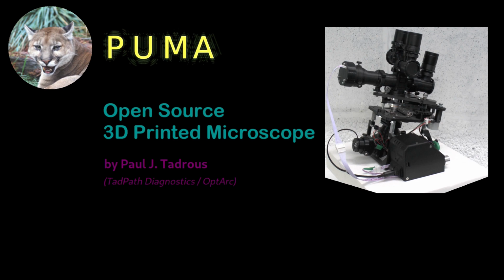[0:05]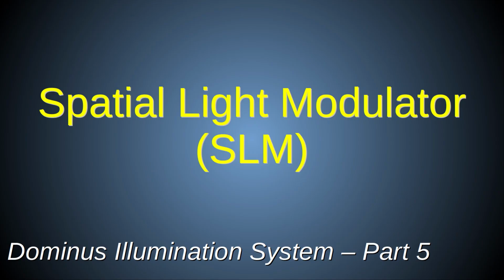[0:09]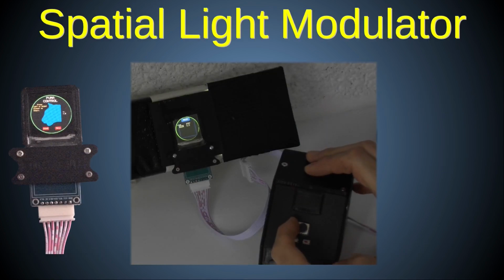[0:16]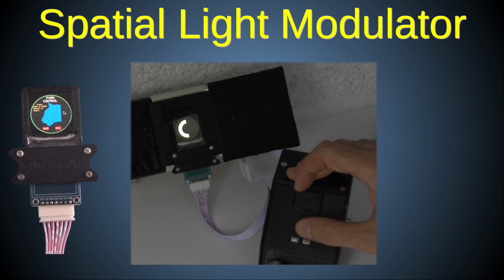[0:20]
In this video, I'll explain how to make the TFT screen-based Spatial Light Modulator, or SLM. This allows for programmable and dynamic Fourier light filtration to implement advanced contrast methods.
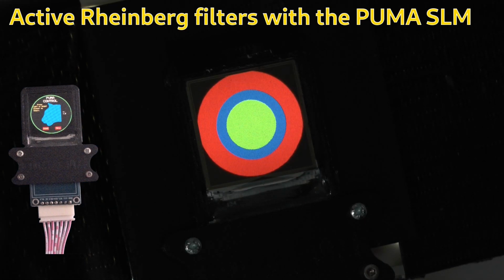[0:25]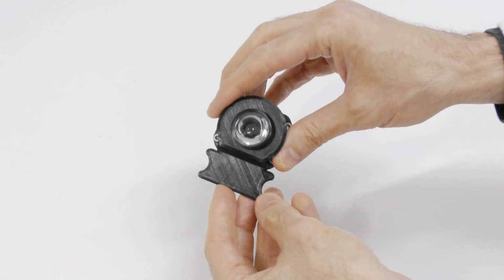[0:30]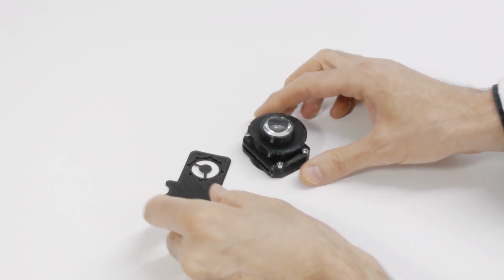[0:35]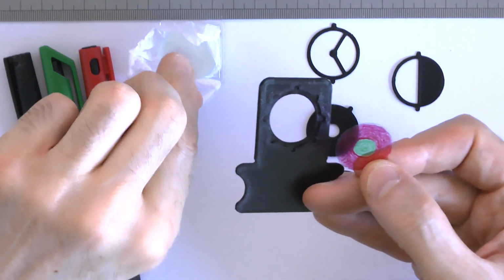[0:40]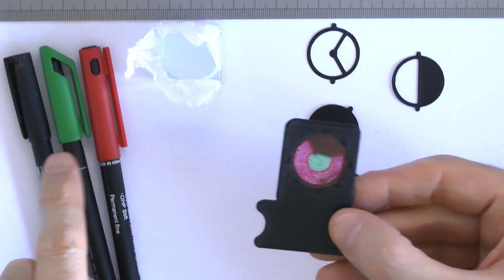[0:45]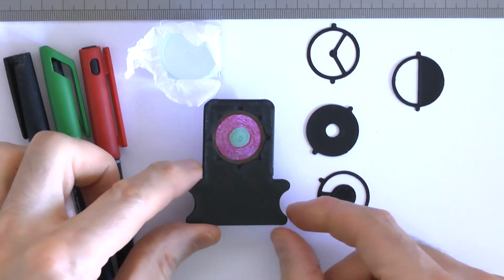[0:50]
You can implement some advanced contrast methods without this SLM, using PUMA's easy-to-access Fourier plane of the condenser with a simple filter system. This filter tray can take a standard 25mm round glass cover slip on which you can print any arbitrary aperture in black and white or various colors. So, you don't need this TFT SLM for doing things like Rheinberg filters, oblique illumination, Schlieren phase contrast, dark ground illumination, and other static custom apertures.
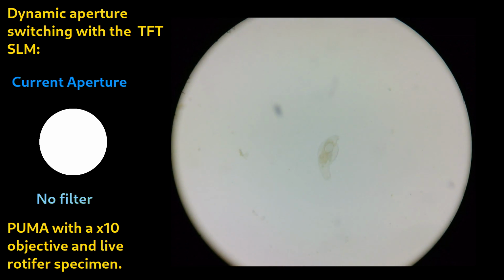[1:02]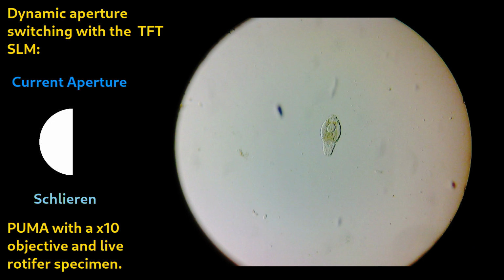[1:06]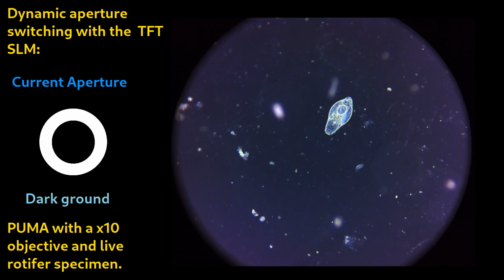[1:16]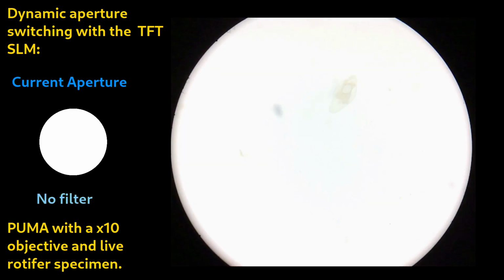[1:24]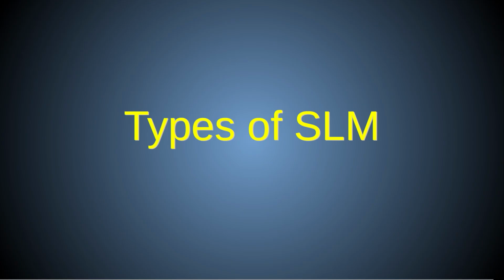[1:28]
The real benefit of this TFT-based SLM is its dynamic, programmable nature, which allows you to derive optimum apertures algorithmically and to perform aperture scanning, such as for Fourier ptychography and 3D tomography. It also allows you to change apertures rapidly during observation without mechanically disturbing the microscope by physically changing the filter in the slot.
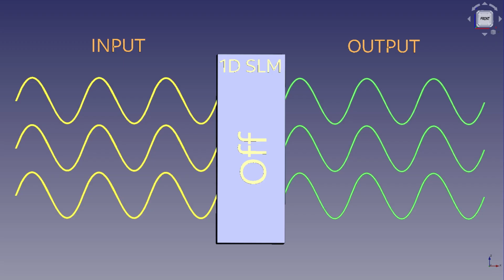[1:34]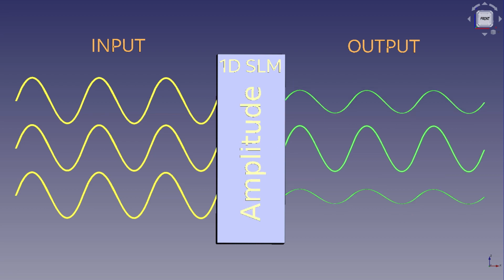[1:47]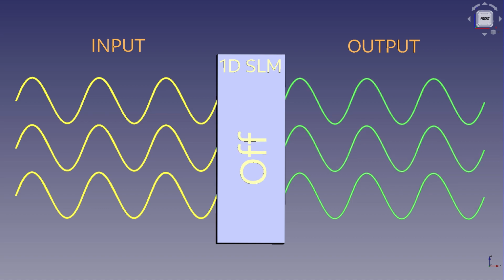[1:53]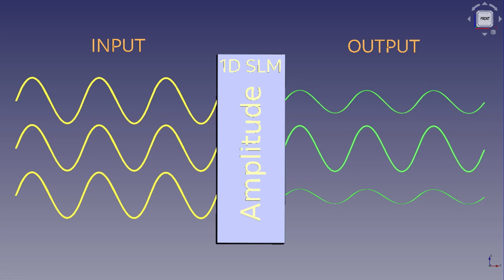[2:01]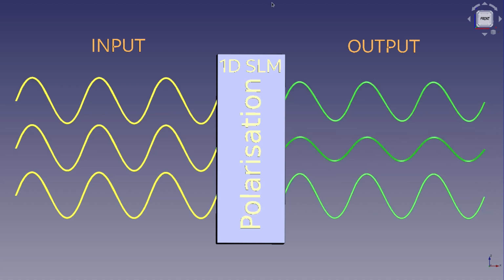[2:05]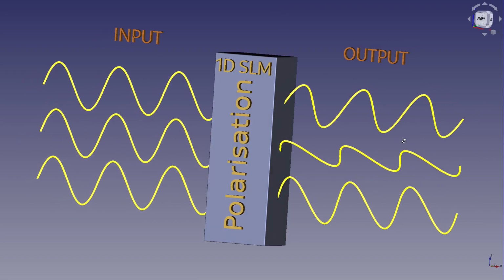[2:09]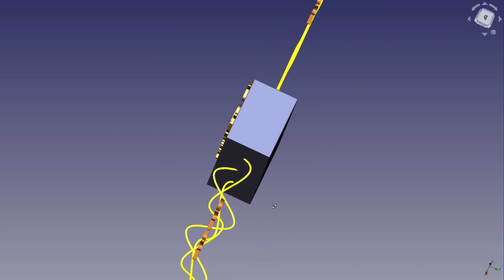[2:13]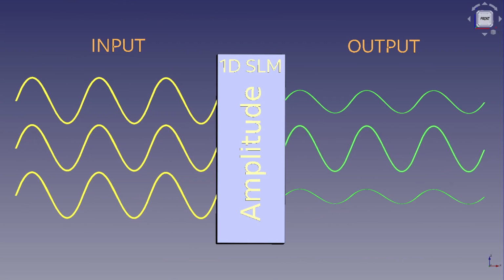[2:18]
In general, a spatial light modulator refers to any device that can alter the characteristics of a field of light in a way that varies from one part of the field to another. This spatial pattern of variation may be static or it may be dynamic, for example by being under computer programmable control. Examples of characteristics of light that an SLM can modulate include its amplitude, its phase, and/or its polarization. So, an amplitude SLM, for example, alters the amplitude or intensity of light coming from it in a way that can change at various points across its surface.
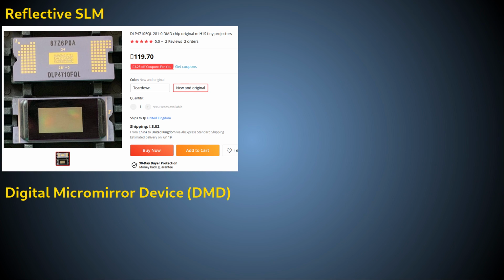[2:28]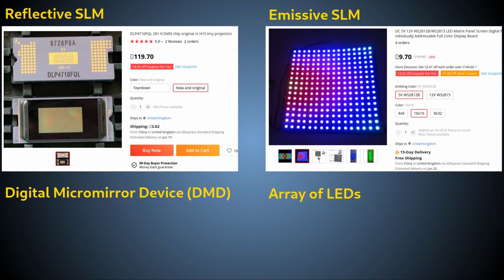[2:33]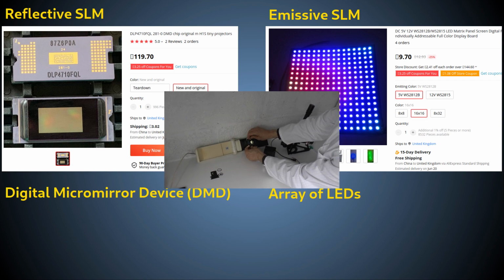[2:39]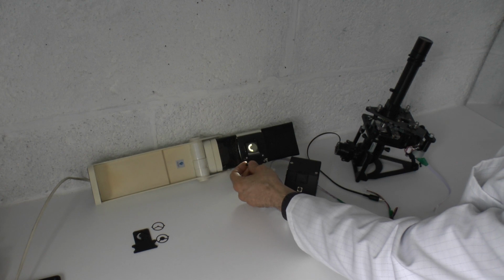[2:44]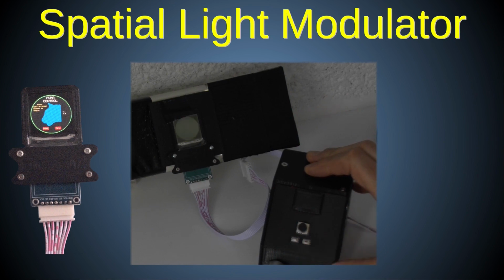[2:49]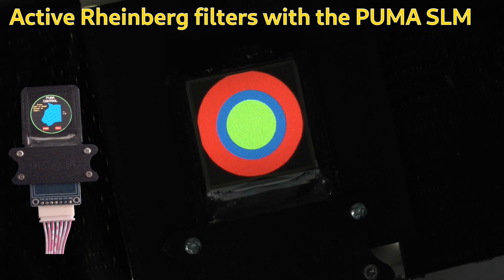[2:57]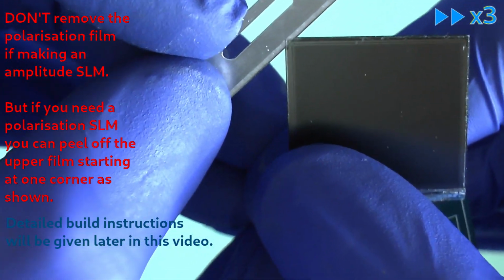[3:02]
SLM devices can be reflective, such as a digital micromirror device or DMD, emissive, such as an LED illumination matrix, or transmissive, such as a transparent TFT display device. The PUMA SLM is most often used as a transmissive amplitude SLM, which uses the polarizing effects of a TFT screen to restrict the passage of light through it at any point across its surface in a way that can be controlled by a computer. However, if you remove the upper polarizer filter from the TFT, then it becomes a polarisation SLM instead.
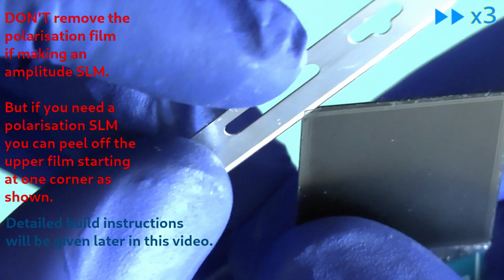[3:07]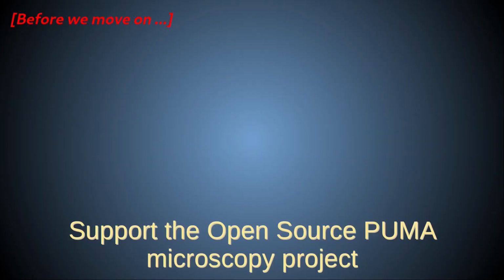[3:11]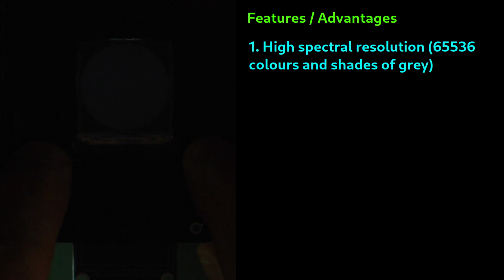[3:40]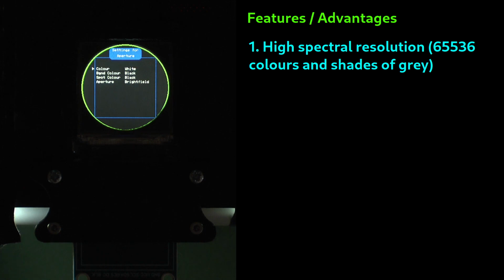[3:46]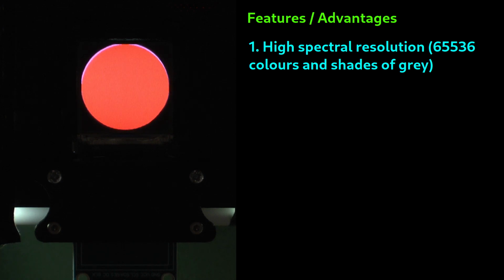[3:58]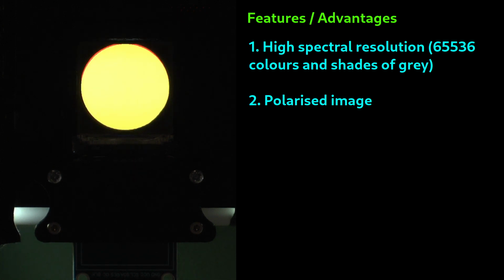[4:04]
The PUMA SLM is a color SLM in that it can restrict light passing through tiny RGB filters differentially at each pixel position, and it can restrict the light in a graded way, so not restricted to all or nothing passage like a traditional physical aperture. Because the PUMA SLM is based on a TFT screen, the light passing through it will be linearly polarized. This may be an advantage, a limitation, or a neutral point depending on your intended application.
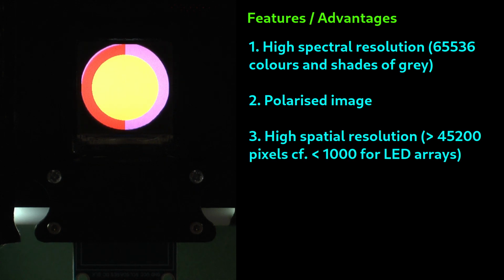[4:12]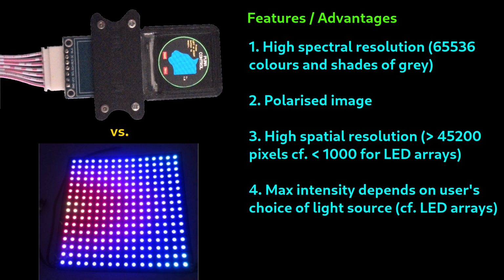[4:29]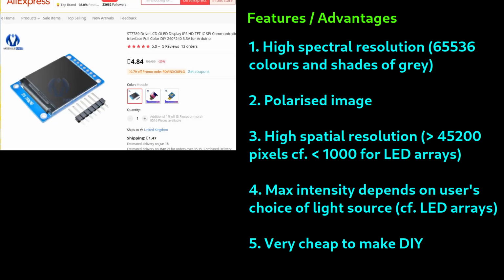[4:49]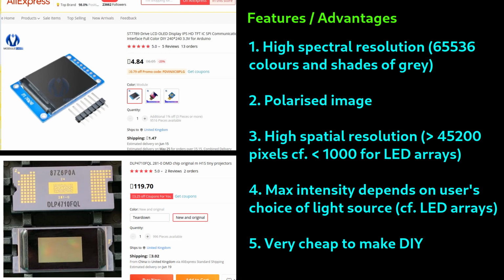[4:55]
Unlike an emissive LED array, the PUMA SLM has a higher spatial resolution of more than 45,000 addressable pixel positions across its 24mm clear round aperture, compared to less than 1,000 for LED arrays that have been used in the published scientific literature to date. Also, the amount of light transmitted by a PUMA SLM is limited by whatever illumination source you choose to use, including laser light, whereas LED arrays are limited by whatever output each LED can produce. The PUMA SLM is also much cheaper than other SLM types, being based on this inexpensive TFT screen module costing only a few pounds, whereas a typical DMD costs over £100 and a phase SLM can cost over £10,000.
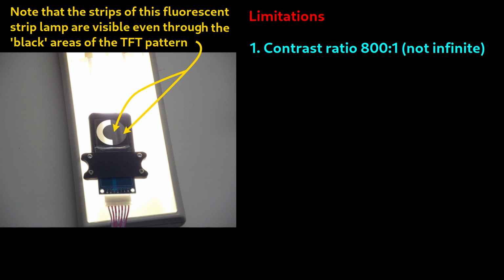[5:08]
There are, of course, some limitations to the PUMA SLM. Firstly, it cannot produce 100% blockage of light. Even the black areas allow some light to get through. The stated contrast ratio for the TFT is about 800 to 1 according to the product datasheet. However, in some circumstances, this light leakage can be used to advantage.
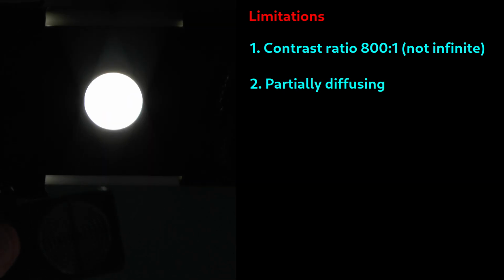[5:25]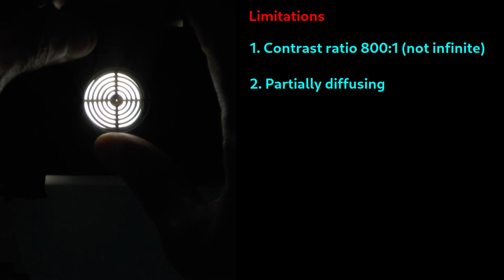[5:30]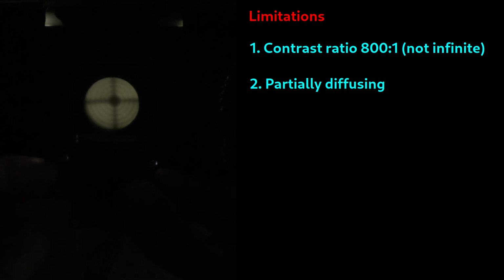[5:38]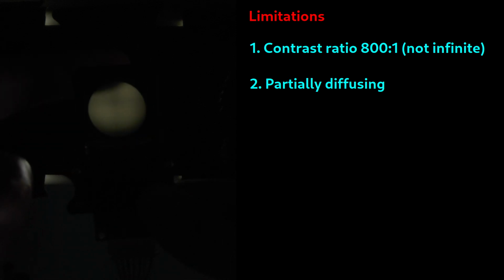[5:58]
Also, the PUMA SLM is not completely optically clear. It has some diffusing properties. For this reason, it cannot be used behind the objective lens, for example, to effect Fourier filtration in the back focal plane of the objective. And, when used in the lower focal plane of the condenser, it will blur the image of the field stop, so will not permit full Köhler illumination. This latter issue is not practically important in most cases, because the field stop image is not as important in reducing internal reflections in a PUMA scope as it is in some other and older microscopes.
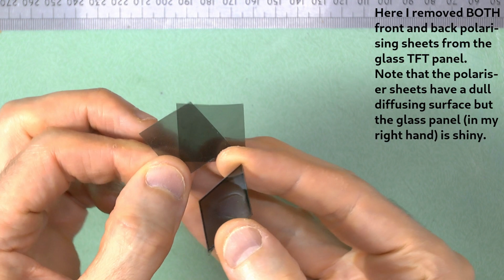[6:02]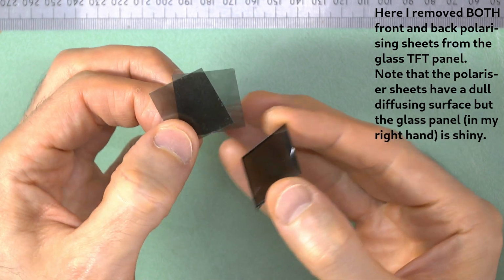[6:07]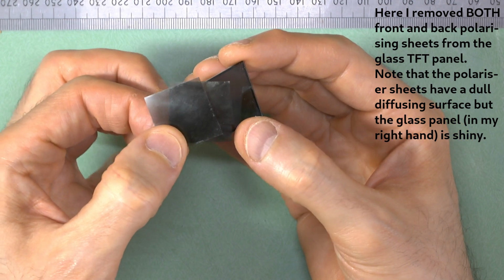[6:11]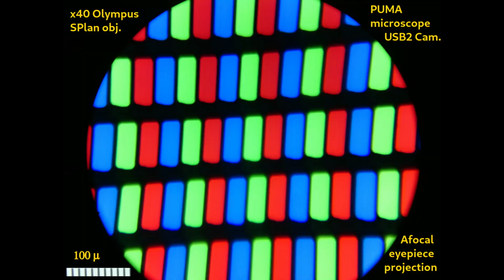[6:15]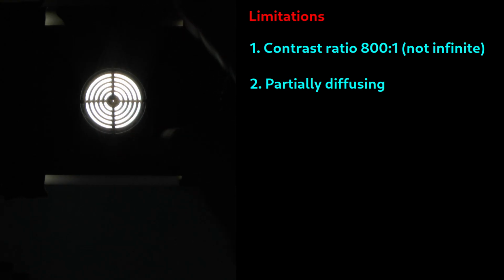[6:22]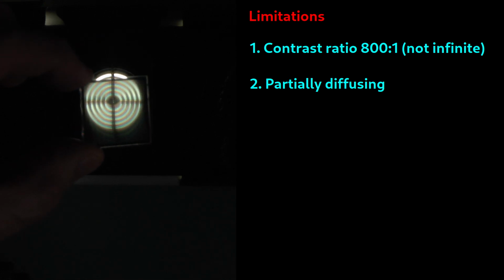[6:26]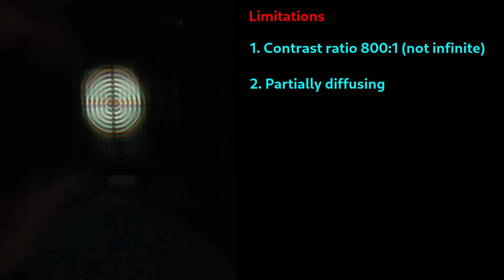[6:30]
It is possible to remove the diffusing polarizer film on the front of the TFT panel and replace it with a clear non-diffusing film. However, that will not solve the issue because the interfaces between the RGB filters for the pixels in the glass of the TFT panel act as a kind of diffraction grating and so can cause some dispersion of the transmitted light anyway. The diffusing polarizer actually helps by eliminating these diffraction grating effects, so I do not recommend replacing it.
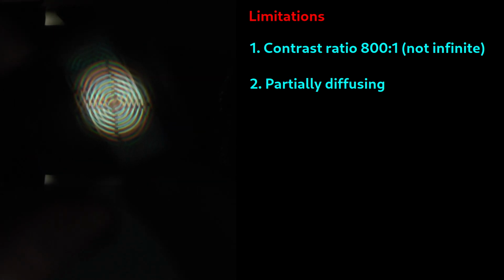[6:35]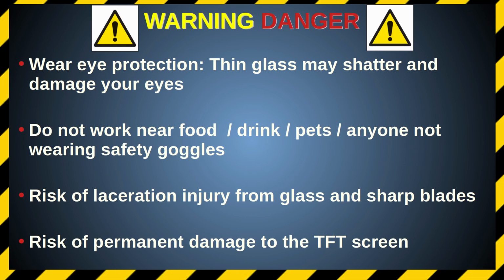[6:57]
Finally, it's quite difficult and potentially dangerous to remove the backlight from one of these TFT displays, so it's difficult to make a PUMA SLM, whereas other types can simply be bought ready to use. Be warned that there is potential risk to your eyes from shattering the thin glass in these displays while attempting to remove the backlight, so you must always wear laboratory-grade eye protection if you attempt to perform this procedure.
For the same reason, do not perform this procedure in the presence of others unless they too are wearing appropriate safety goggles, and do not attempt this procedure in the presence of any pets, food or drink that could get contaminated by flying shards of glass. Take appropriate precautions to prevent cuts to yourself and others from handling the sharp tools used in this procedure as well as from potential glass fragments. Take care to clean the work area well afterwards.
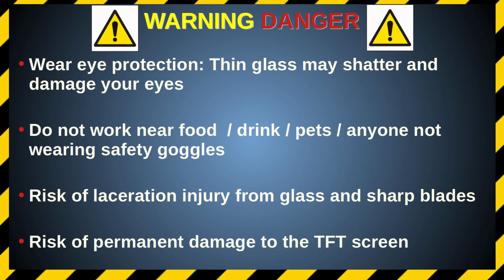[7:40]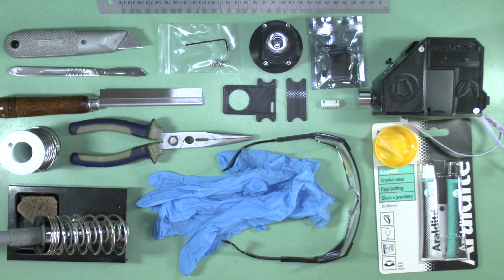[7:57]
There is also a high risk that you will permanently damage or destroy the functionality of the display at any stage during this procedure, so do not attempt this procedure unless you're prepared to accept such loss. The method I'm about to show you is not foolproof and does not guarantee success. These are the parts and the tools you'll need to build the SLM. Details are provided in the video description.
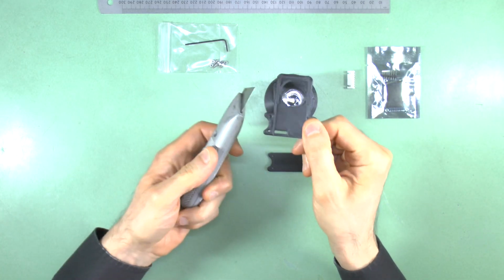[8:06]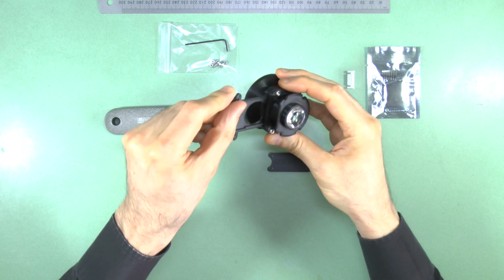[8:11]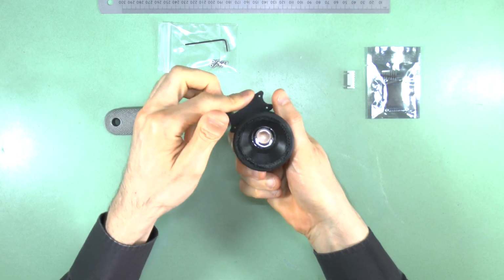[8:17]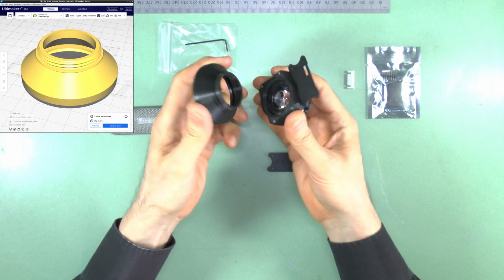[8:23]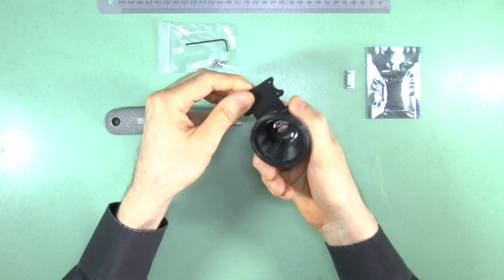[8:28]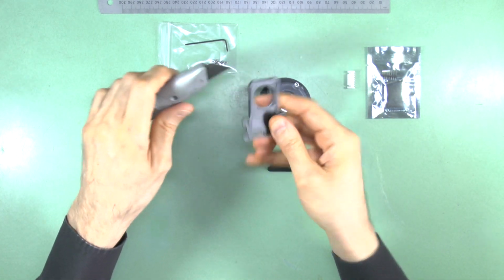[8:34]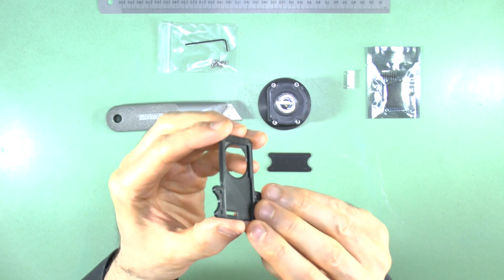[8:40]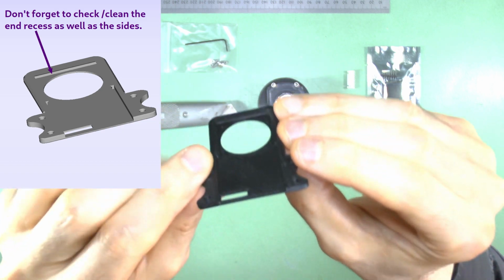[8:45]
First, clean up the printed parts and test the SLM holder to see if it fits easily and with minimum force into the slots you intend to use it with. Here I'm using an Abe condenser. Ensure that the adapter module is attached to the condenser during the test, either the condenser to mirror holder adapter or the condenser to upper collector adapter. If there is difficulty inserting or removing the SLM holder, scrape and/or do whatever else it takes to fix the problem at this stage before inserting the delicate TFT screen. Ensure that the slot that will accept the TFT panel is clear of any stray plastic blebs or threads.
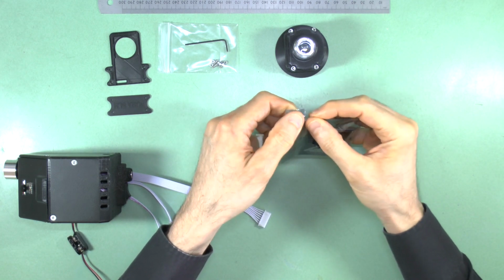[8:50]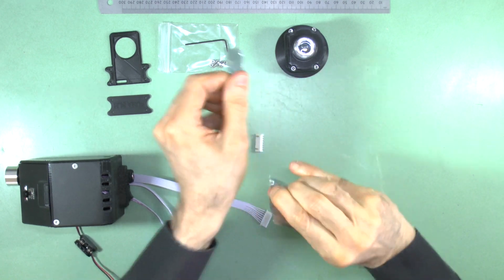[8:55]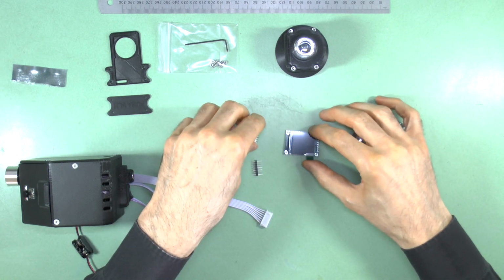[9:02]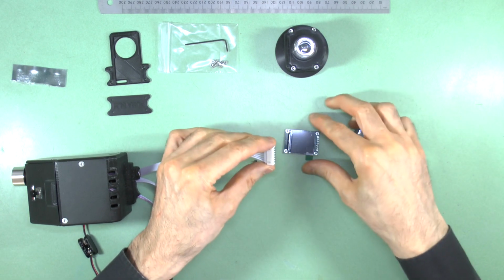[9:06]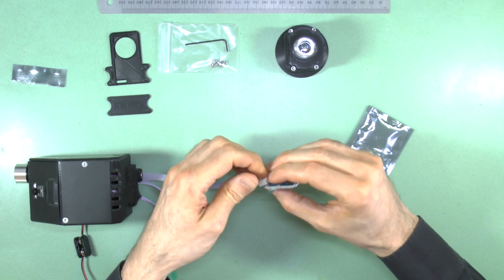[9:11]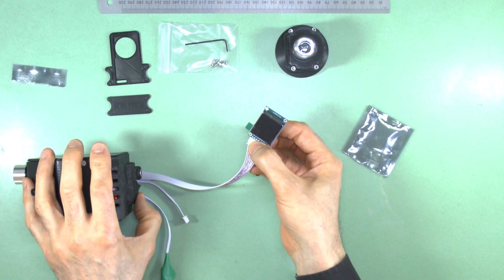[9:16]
Before modifying the TFT screen, first connect it up to a suitable power supply and display driver and test it. Here I'm using the PUMA Control Console or PCC, but you can use your own custom driver. This is so you know that the screen is working and undamaged prior to modification. You should also test the screen at various stages of the procedure to ensure it still works, but make sure you do not perform any aspect of the procedure with the screen still powered on, or you may short-circuit the electronics and destroy the screen that way.
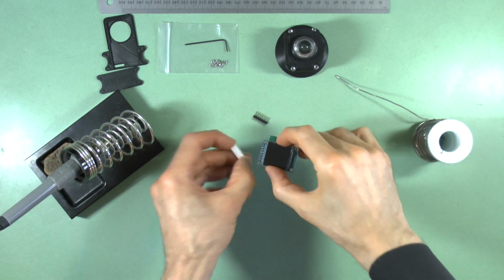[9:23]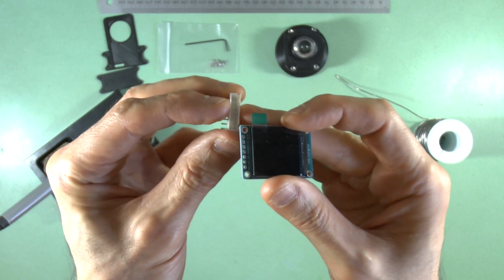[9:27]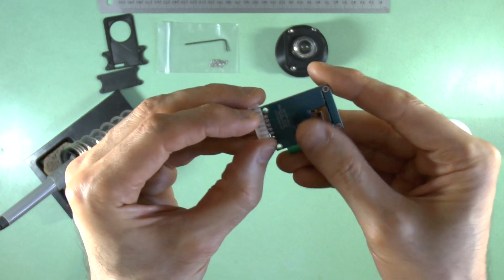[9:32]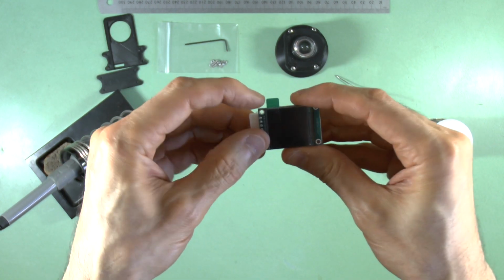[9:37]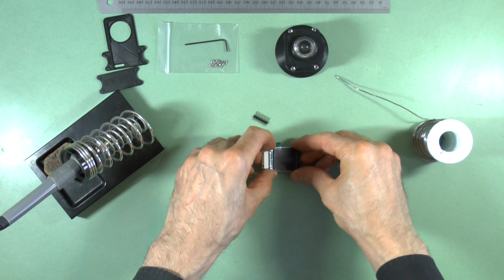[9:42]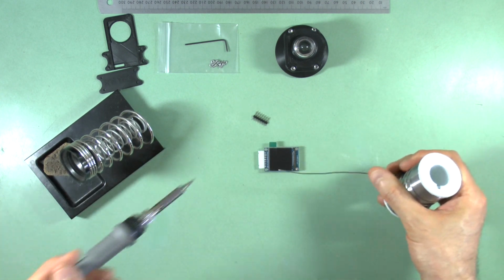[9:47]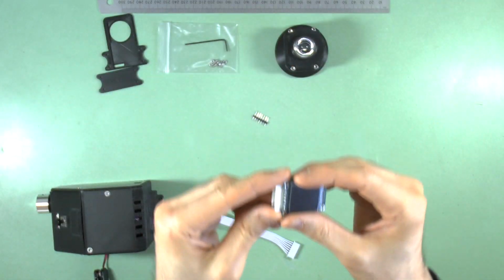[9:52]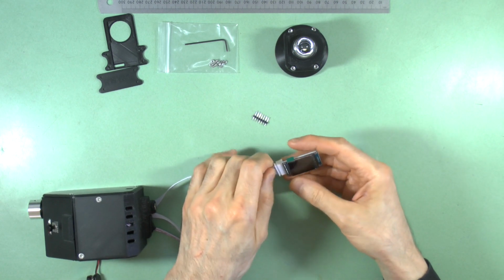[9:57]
Now solder the connector to the screen. I use a 7-pin JST-XH male PCB header with 90-degree pins as shown, rather than the supplied connector, because it ensures I connect the ribbon cable the correct way round each time, provided of course you connect the header the right way round at this stage, so ensure you connect it as shown. After soldering, test the screen to ensure it still works.
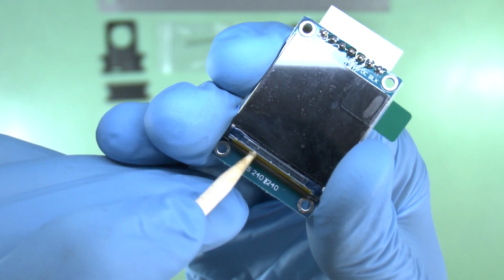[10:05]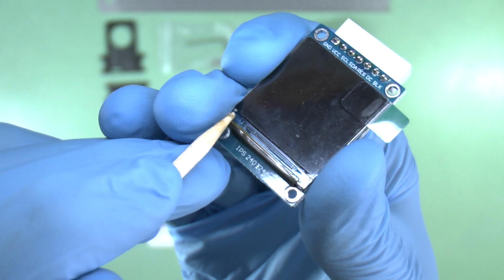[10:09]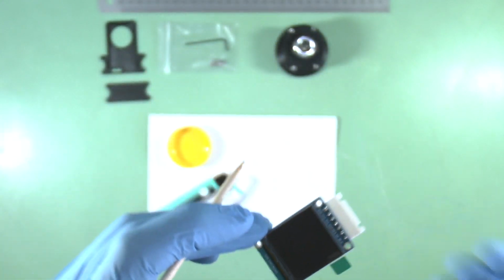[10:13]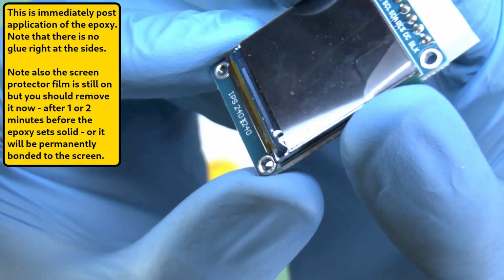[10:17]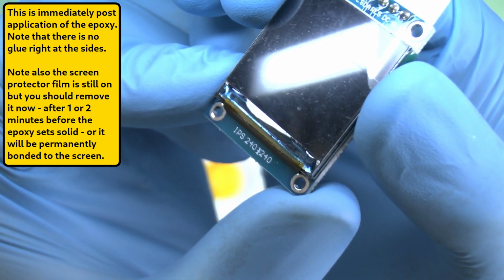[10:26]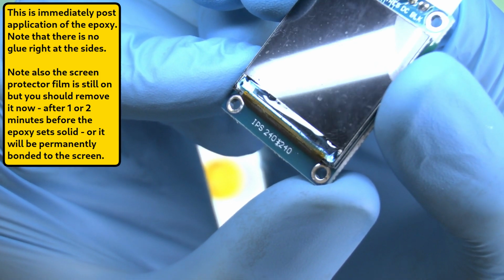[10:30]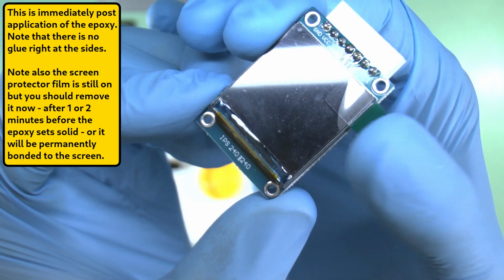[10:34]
The next step is to reinforce the very fragile thin glass connector strip with some strong epoxy resin and allow it to set fully before continuing. This will increase your chances of success, but it will not fully protect the thin glass from cracks, so you must still be very careful. When you do this, ensure that the epoxy does not go right to the edges to contact the metal or overflow down the sides to the underlying layers, and minimize any overspill onto the top of the screen.
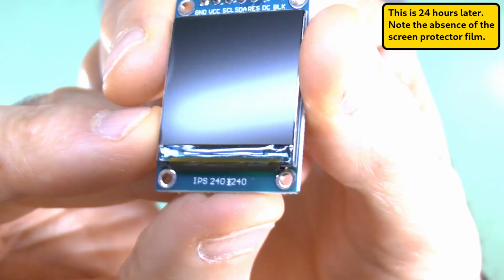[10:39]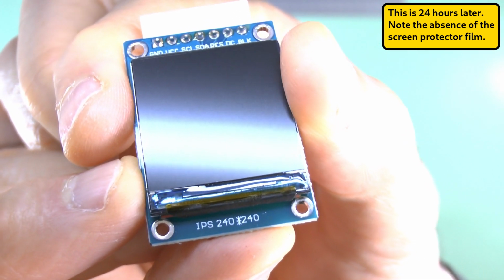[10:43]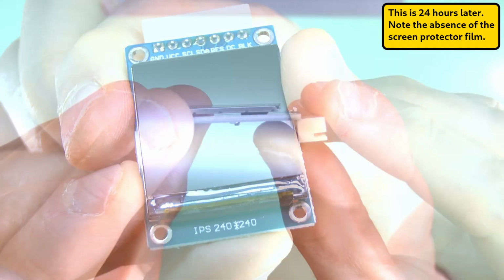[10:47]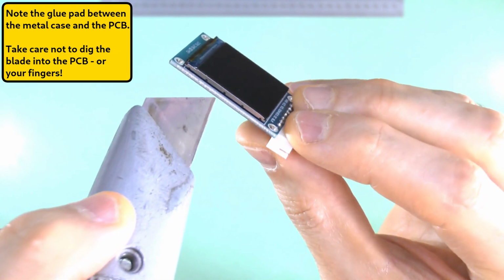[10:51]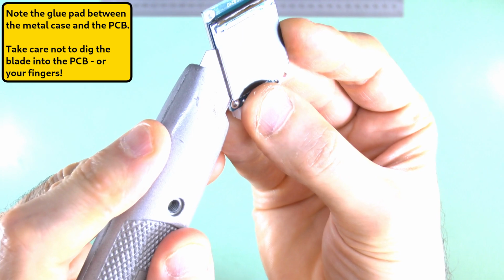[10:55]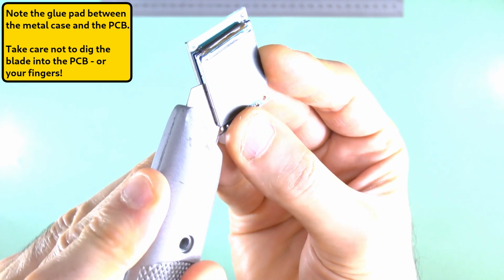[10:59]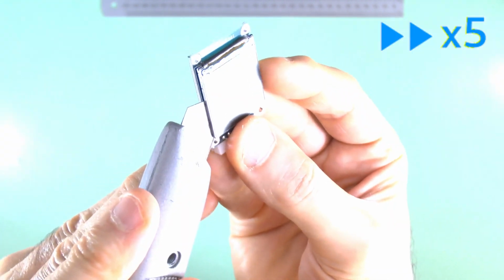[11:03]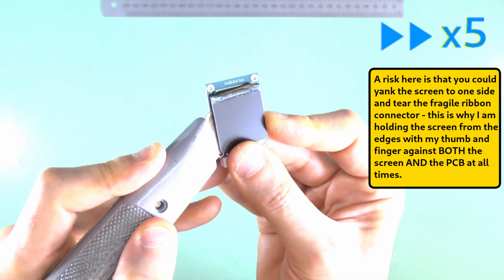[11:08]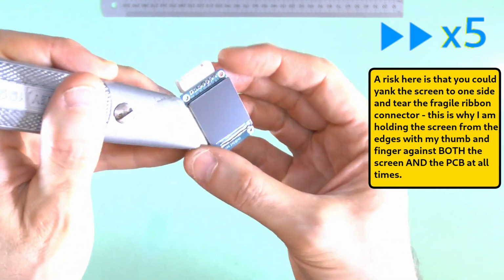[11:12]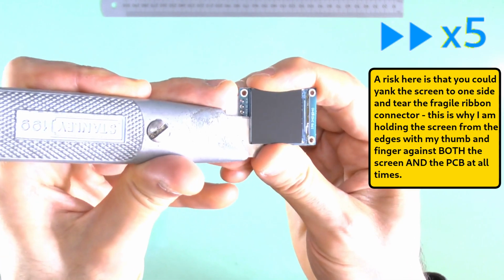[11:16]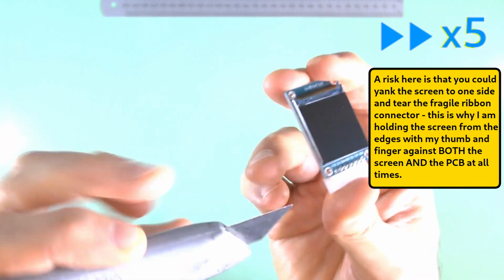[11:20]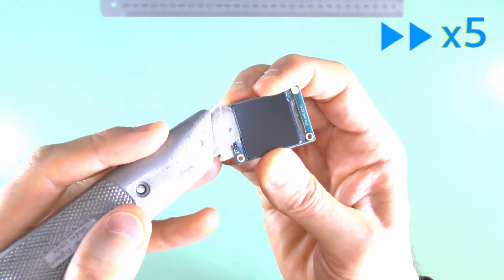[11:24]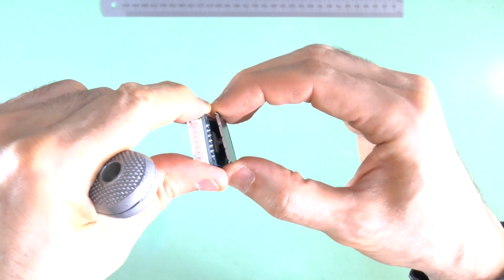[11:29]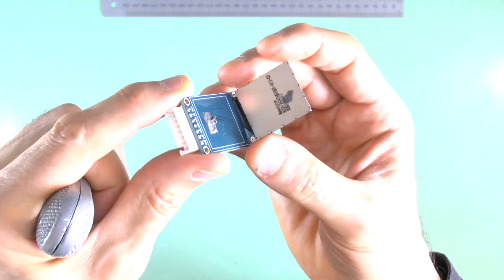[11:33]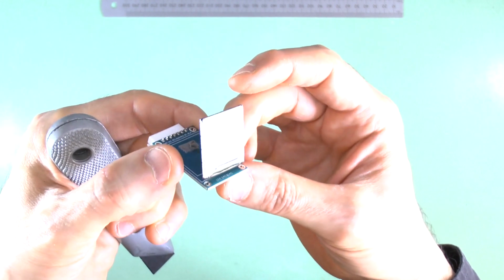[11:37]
Carefully, gently and slowly lever the TFT screen metal housing case off the PCB with a broad flat blade. It is held there by adhesive glue or foam. Once it is free, test the TFT again to ensure this hasn't broken it.
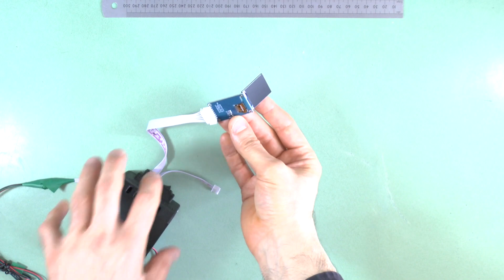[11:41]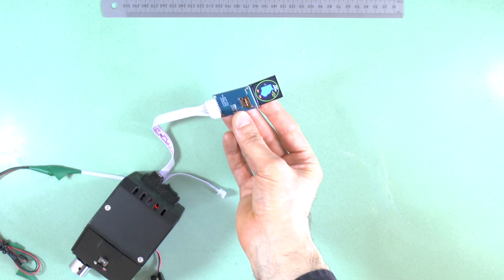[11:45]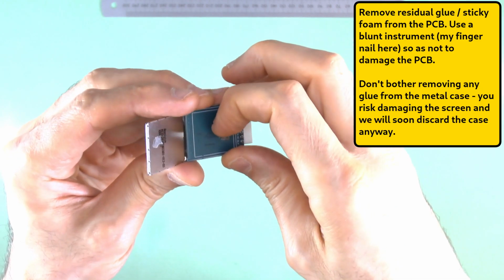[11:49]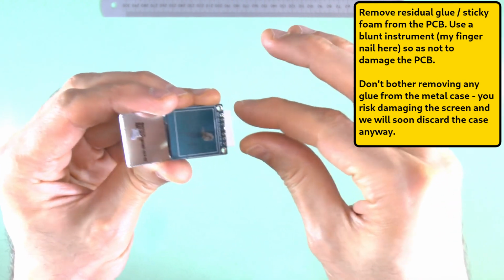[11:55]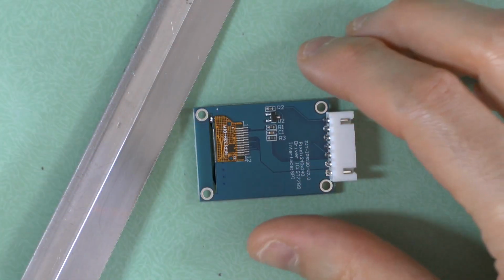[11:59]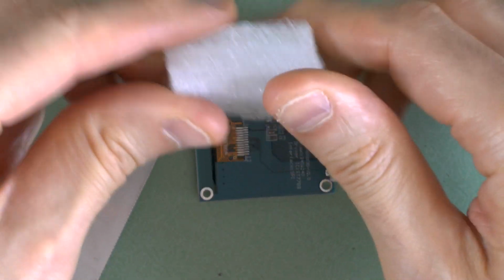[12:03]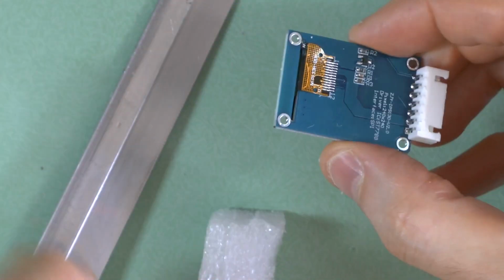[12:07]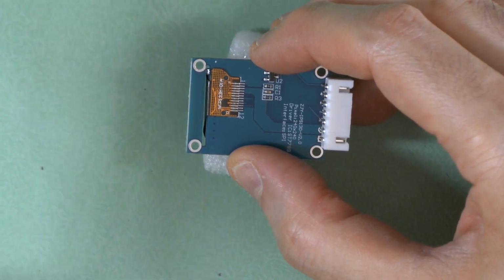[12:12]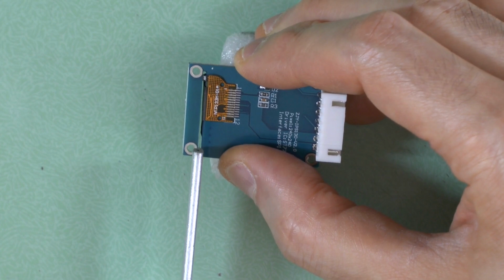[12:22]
Carefully, gently and slowly use a fine-toothed craft saw to make score marks on the PCB on the two sides of the slot that the TFT screen ribbon cable passes through. The side that has the greatest clearance from the ribbon cable is scored horizontally until all the copper layer on both sides has been cut through, and some of the PCB substrate material as well.
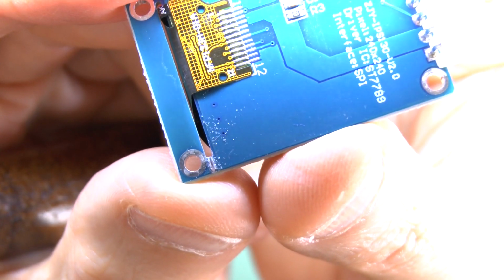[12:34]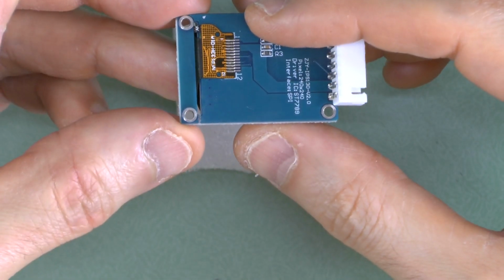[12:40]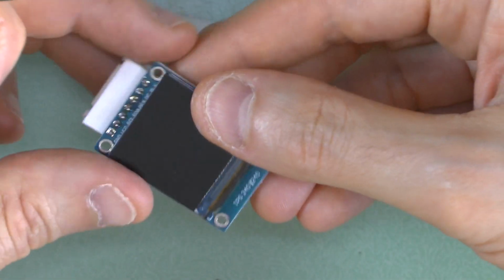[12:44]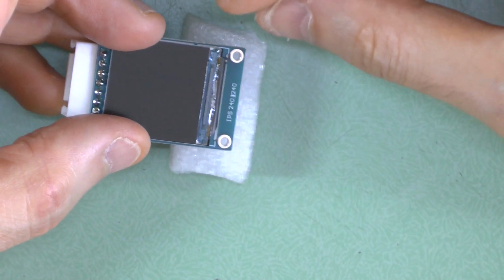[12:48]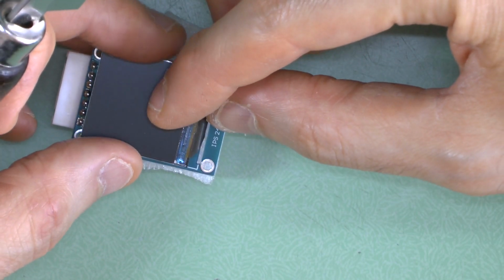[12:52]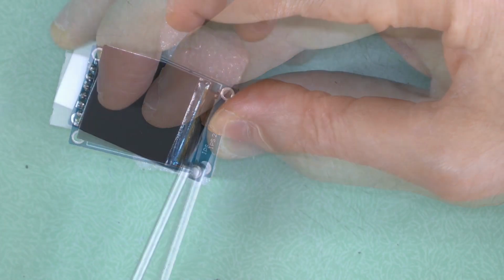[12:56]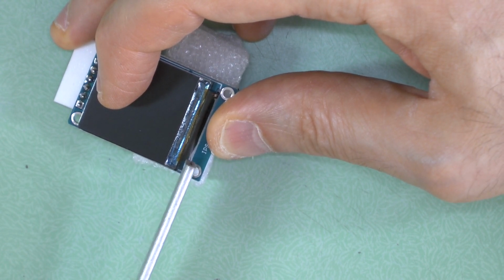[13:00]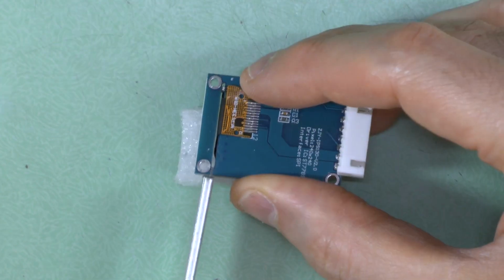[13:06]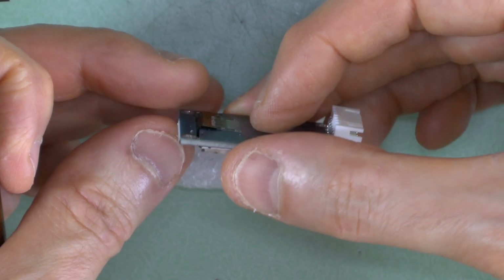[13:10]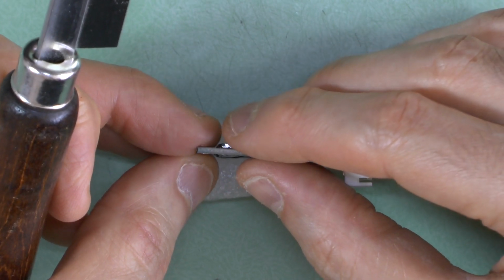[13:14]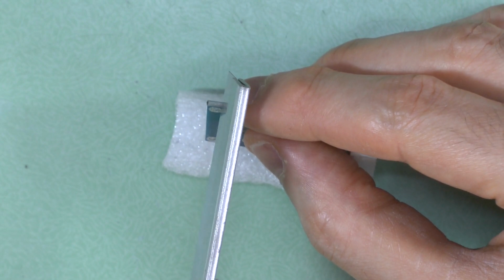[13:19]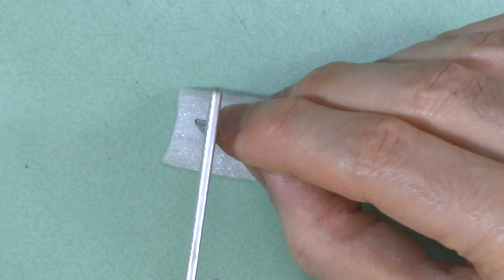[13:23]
On the opposite side, you're too close to the delicate ribbon cable to score parallel to the PCB's surfaces, so score it on its edge, taking care not to stress the cable by putting pressure on the free TFT metal enclosure.
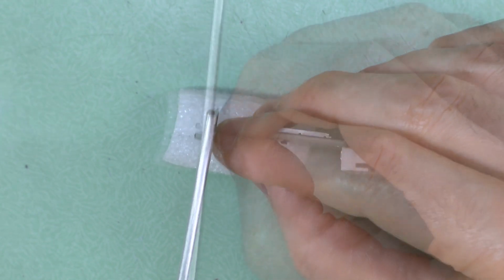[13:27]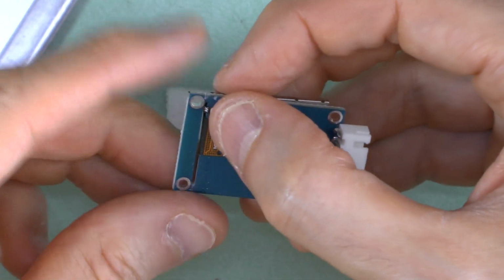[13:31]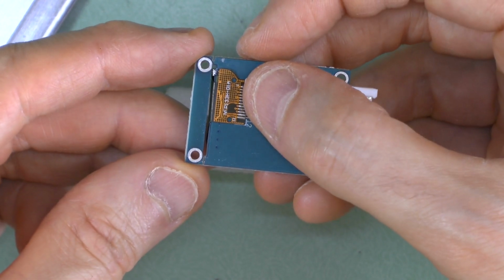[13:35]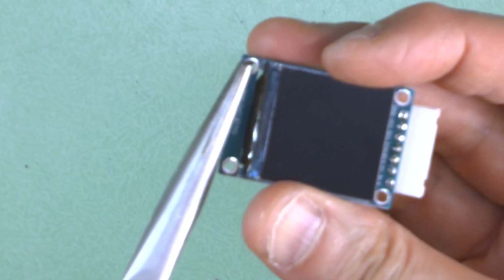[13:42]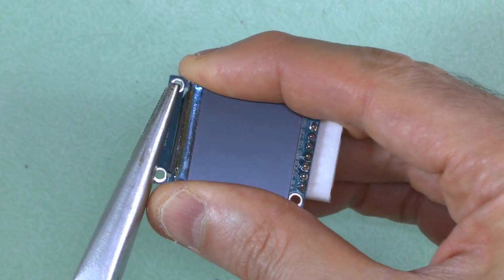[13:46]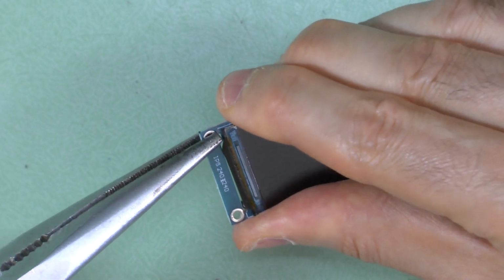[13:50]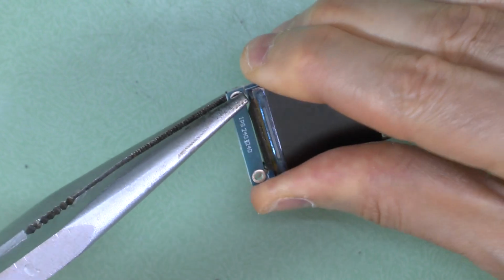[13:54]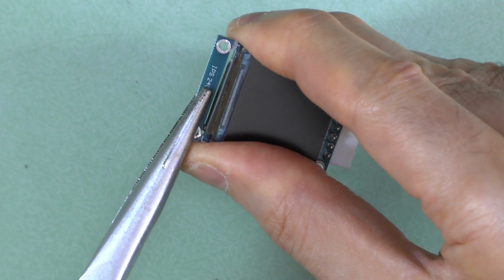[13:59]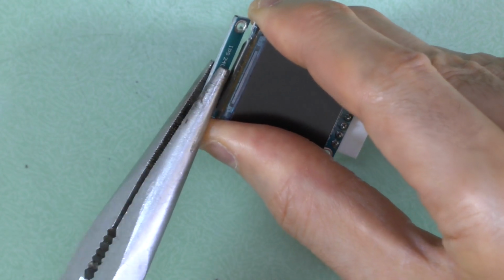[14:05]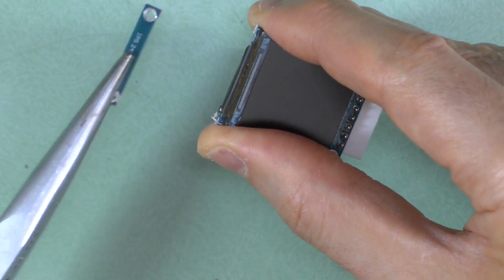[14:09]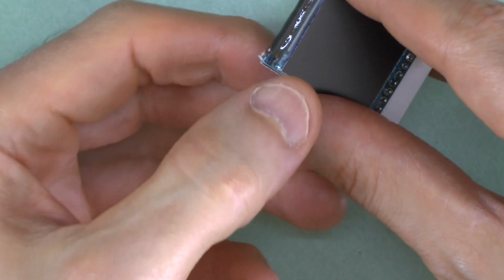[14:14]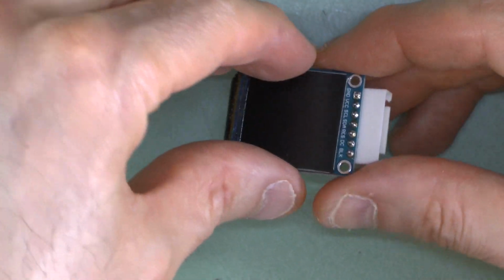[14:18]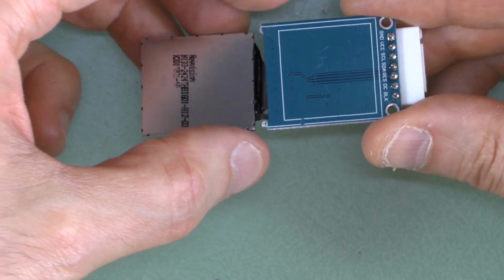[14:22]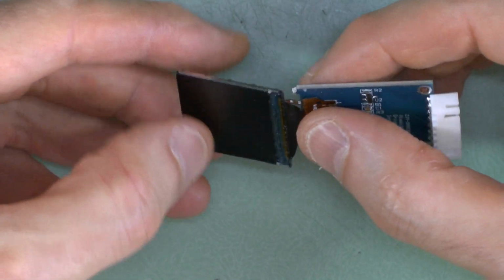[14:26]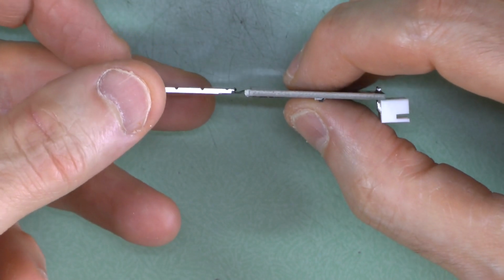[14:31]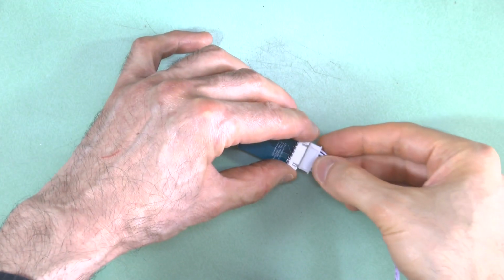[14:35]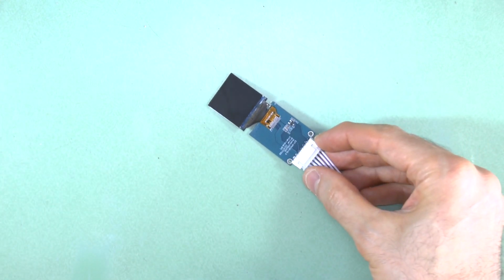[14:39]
Once scored on both sides, use long-nosed pliers to rock back and forth the outer strip of PCB till it snaps off. I snap off the end that was scored horizontally first, and then the end closest to the ribbon cable. Test the TFT after this to ensure it still works.
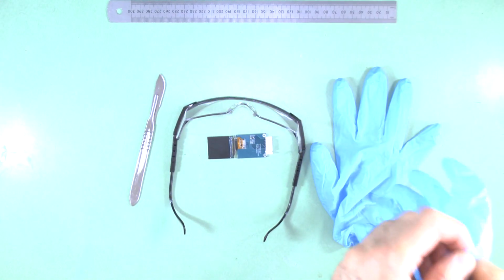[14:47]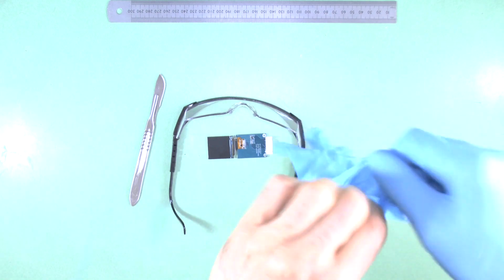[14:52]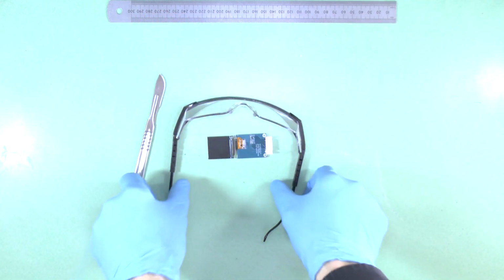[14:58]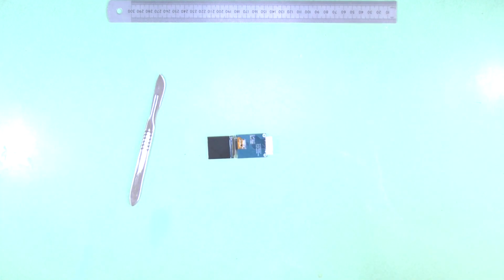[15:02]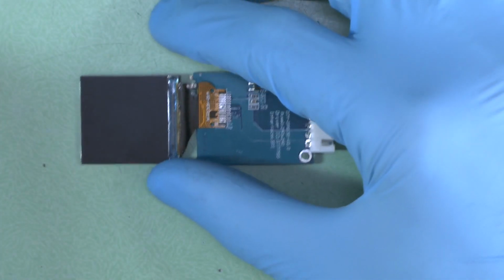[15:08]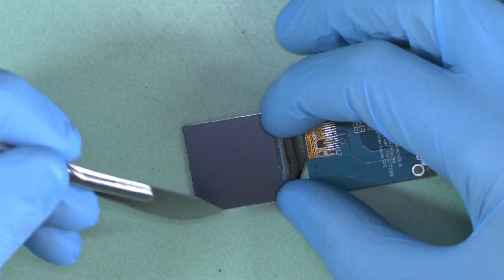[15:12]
This is all tricky and delicate work, but now comes the most delicate of all, removing the metal casing, reflective panels and backlight LEDs. The ribbon cable is connected to a very thin extension of glass coming off the bottom of the main glass panel. We partially reinforced this earlier with epoxy, but it is still very easy to crack with only minimal pressure. With this in mind, wear your eye protection goggles and do the following.
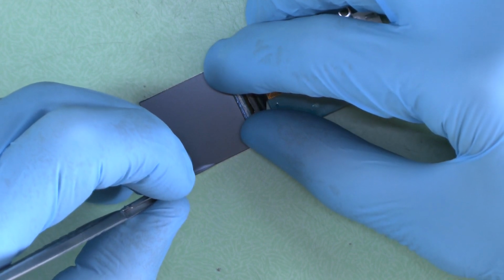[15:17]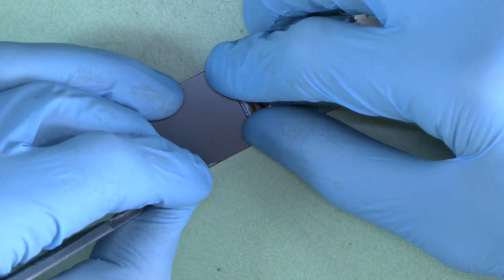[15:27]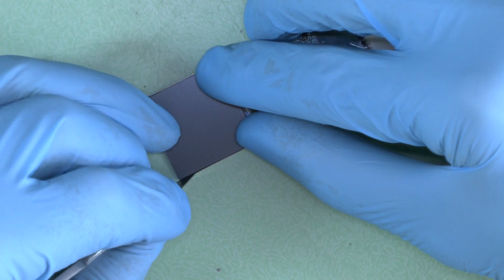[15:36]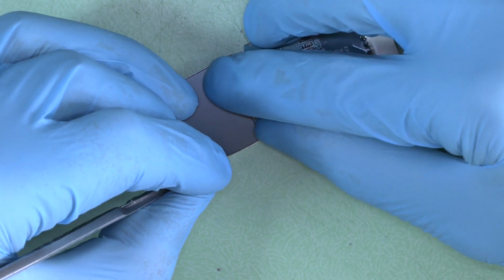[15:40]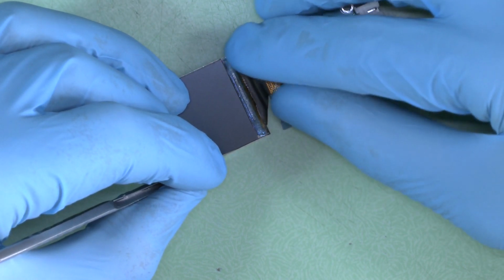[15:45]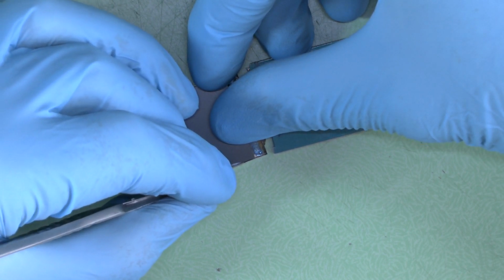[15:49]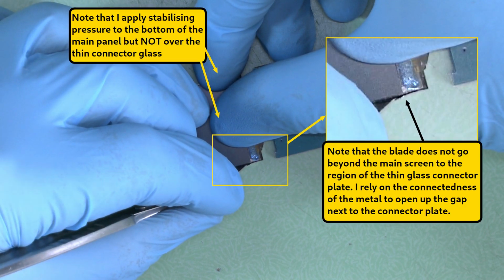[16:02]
Carefully, gently and slowly use a scalpel to get between the metal and the glass panel. Push the blade right down vertically till you reach the bottom of the metal casing, and then slowly bend the scalpel blade away from the glass to open up the metal casing's side panels. Avoid doing this at the bottom where the thin glass extension is, but do it everywhere else.
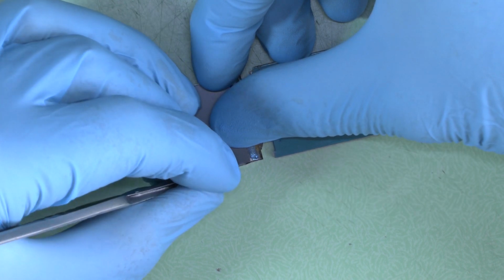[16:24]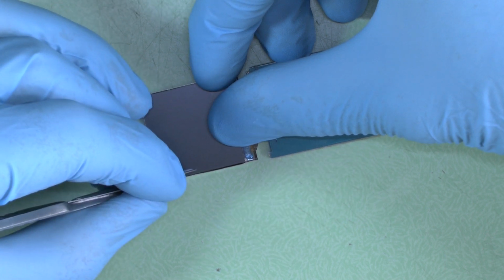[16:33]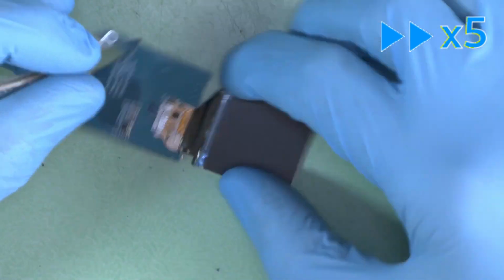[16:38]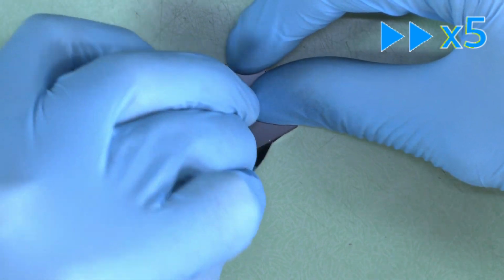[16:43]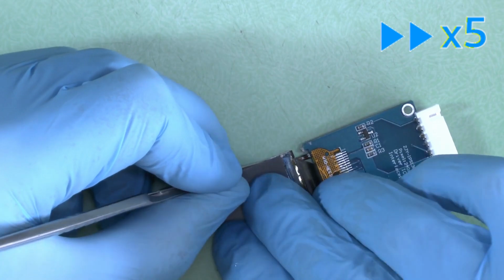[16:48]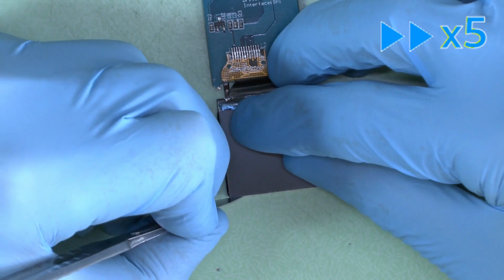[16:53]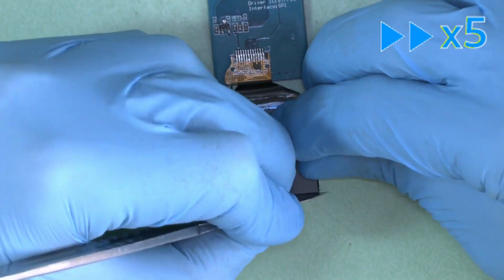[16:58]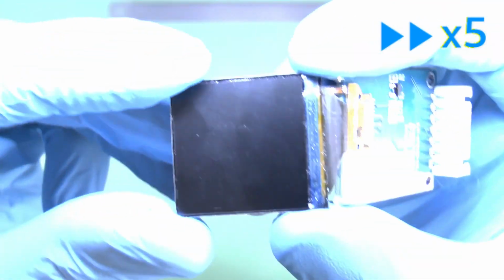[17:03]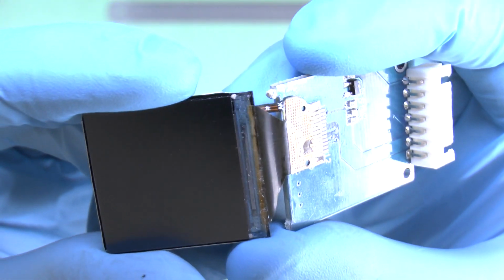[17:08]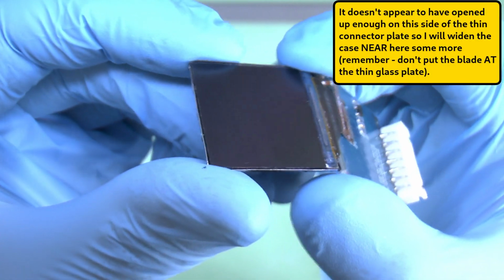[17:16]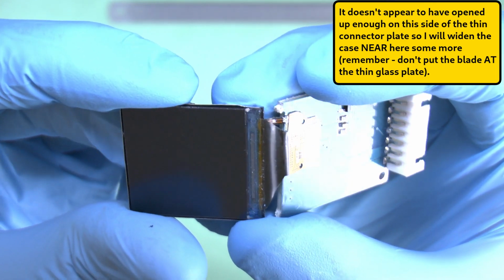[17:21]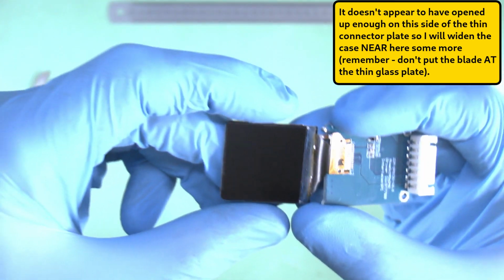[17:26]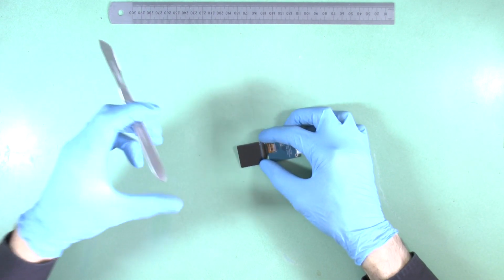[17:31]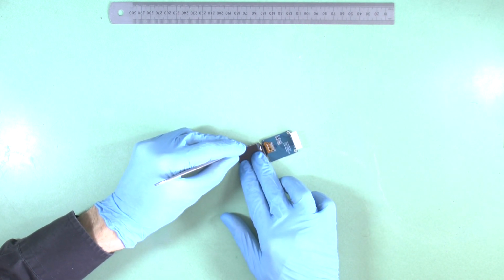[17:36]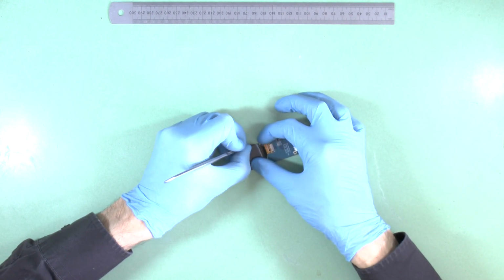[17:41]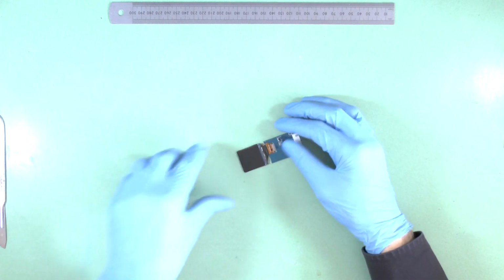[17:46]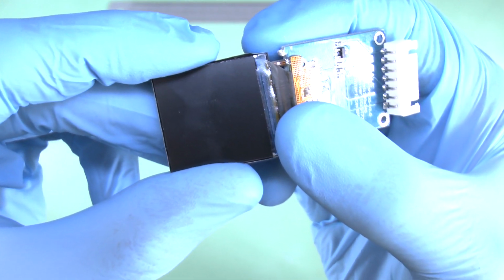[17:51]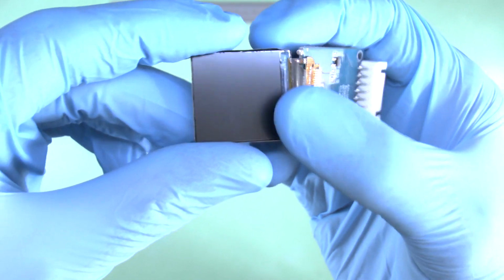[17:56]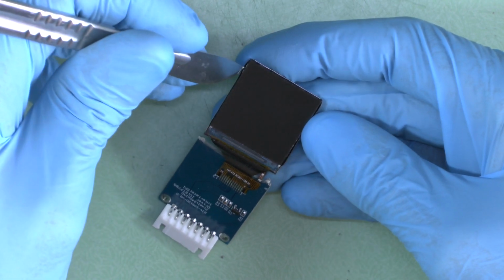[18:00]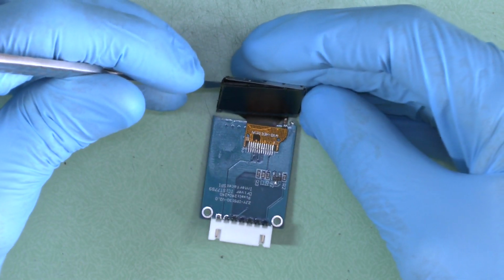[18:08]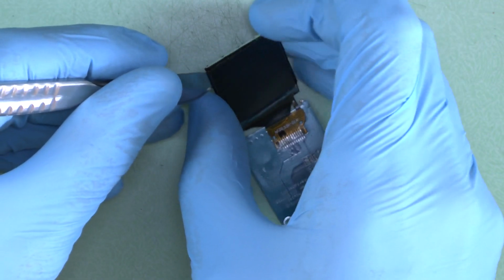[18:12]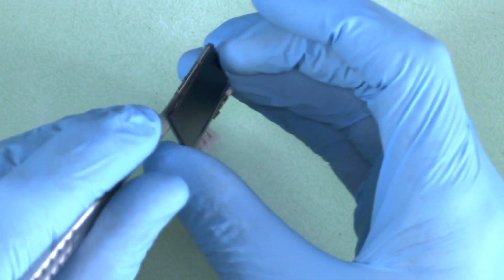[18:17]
Carefully, gently and slowly use the scalpel to lever the TFT plate out partially from the top and side. Don't lever it out fully or all at once, otherwise there will be pressure at the join of the main glass panel and the fragile connector extension glass, and it will crack.
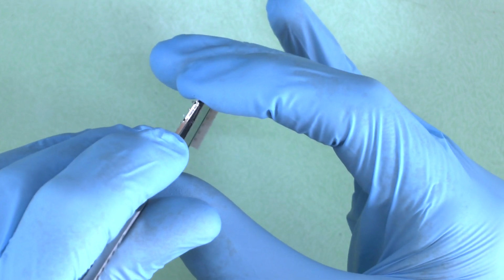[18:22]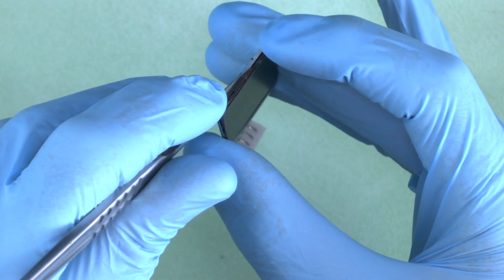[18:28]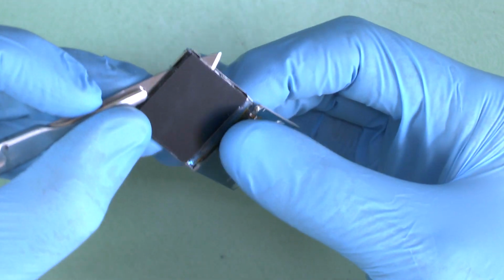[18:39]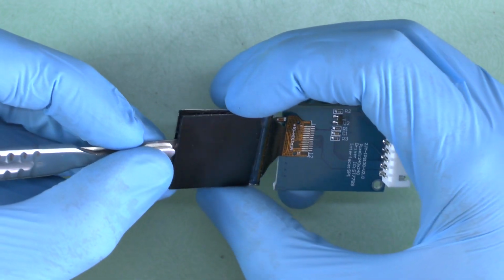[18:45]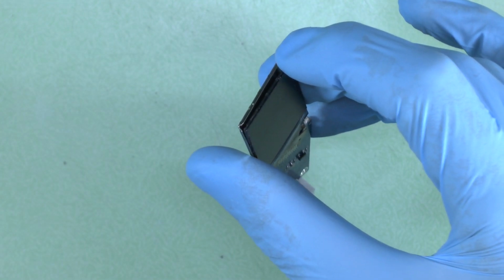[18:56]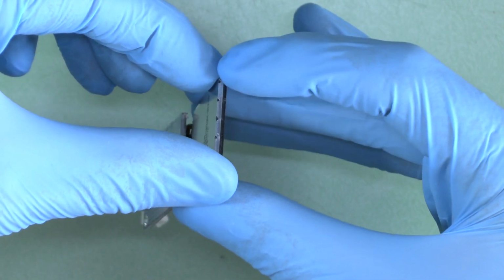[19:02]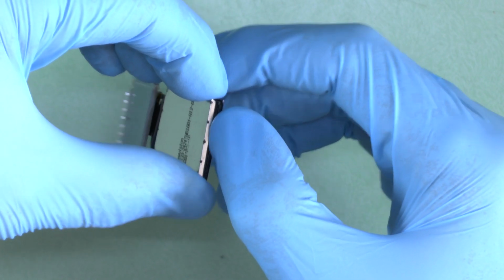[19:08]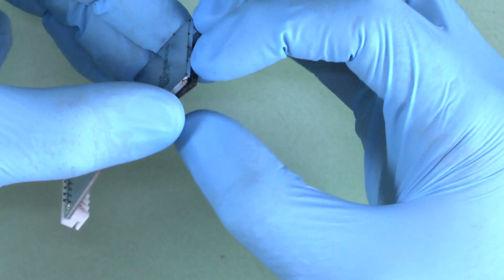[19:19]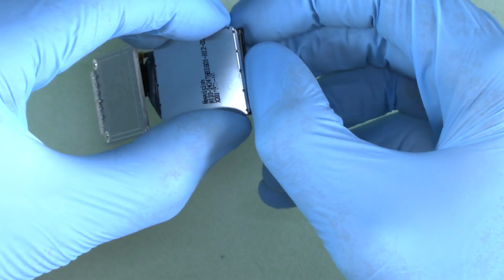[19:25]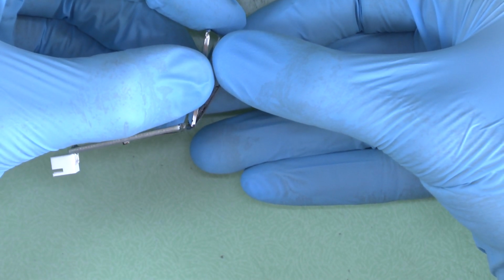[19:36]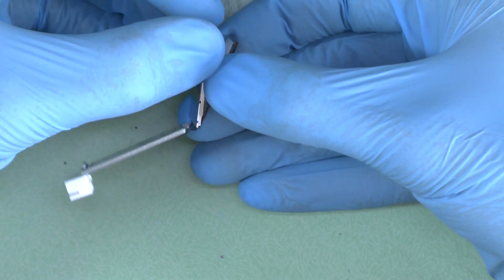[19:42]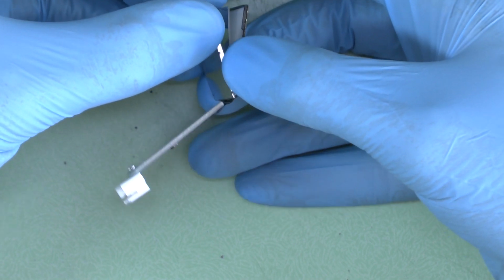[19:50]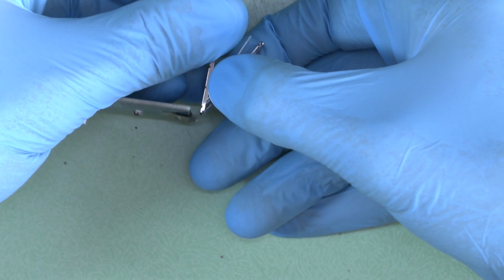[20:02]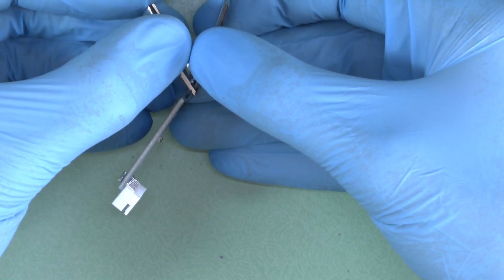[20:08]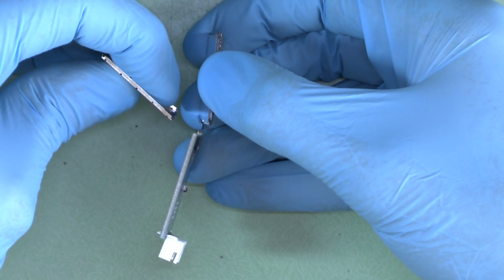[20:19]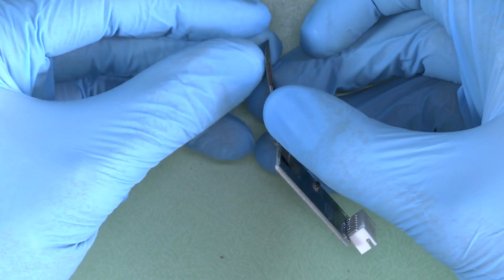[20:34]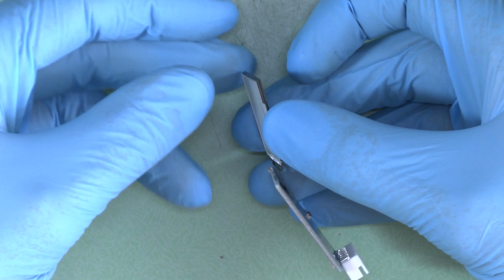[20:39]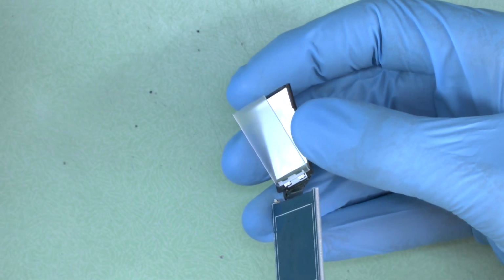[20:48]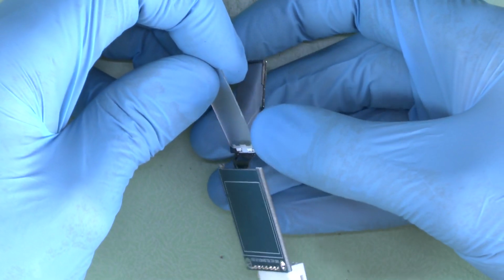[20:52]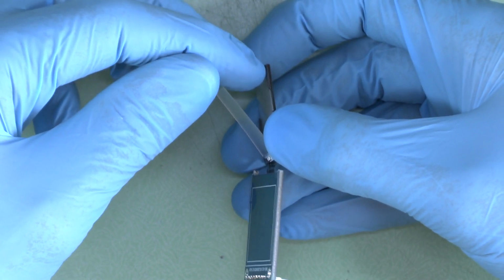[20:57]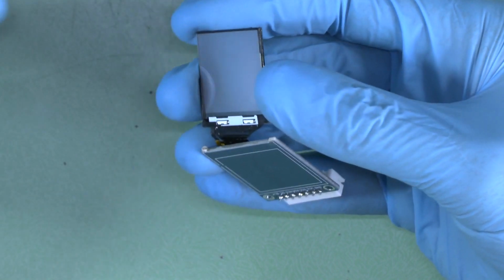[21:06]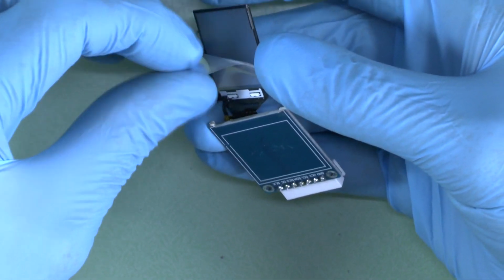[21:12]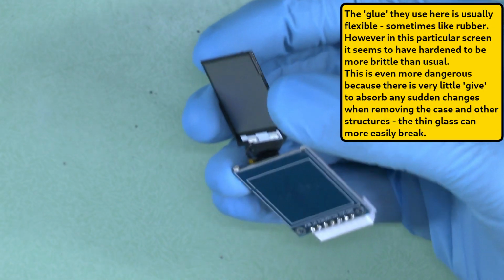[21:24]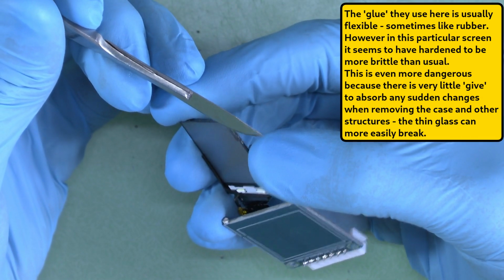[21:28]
Carefully remove the mirror and layers of the diffuser, being very careful about not putting excess pressure near the base where the thin glass connector is. Carefully, gently and slowly use the scalpel to remove the glue from around the periphery of the main glass TFT panel.
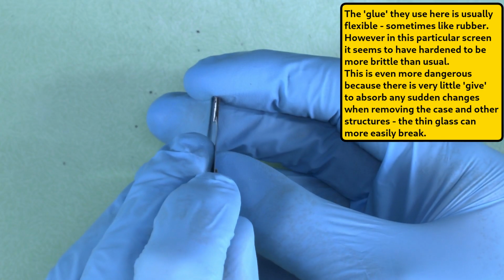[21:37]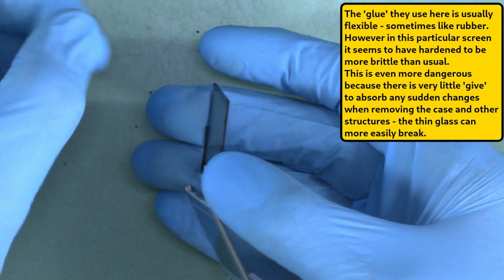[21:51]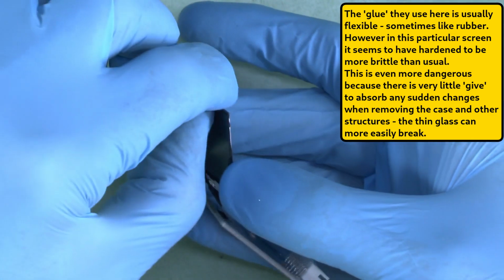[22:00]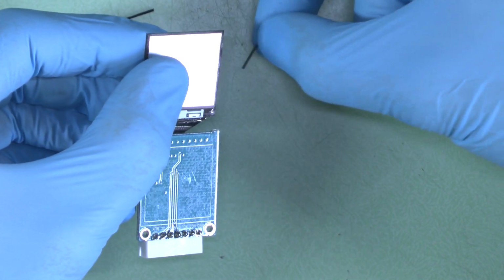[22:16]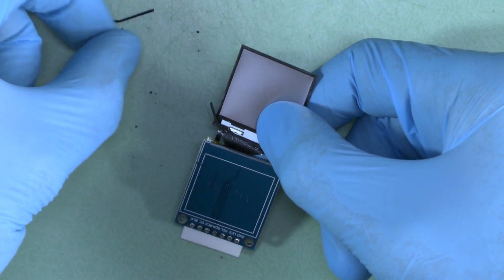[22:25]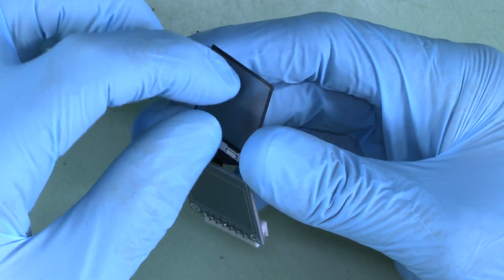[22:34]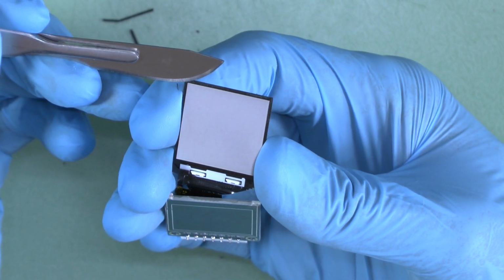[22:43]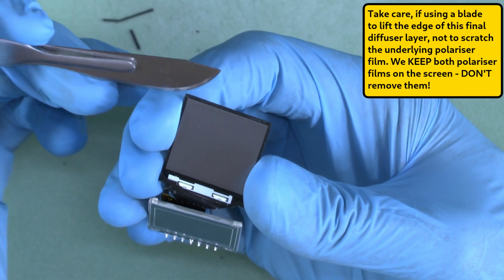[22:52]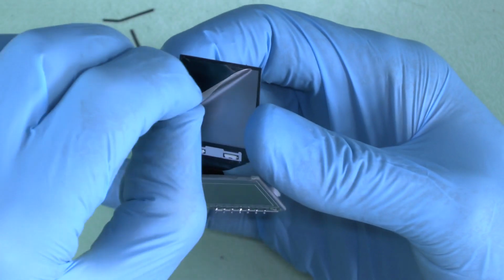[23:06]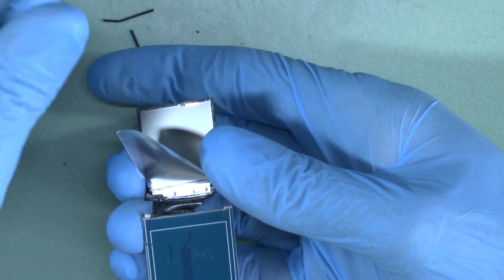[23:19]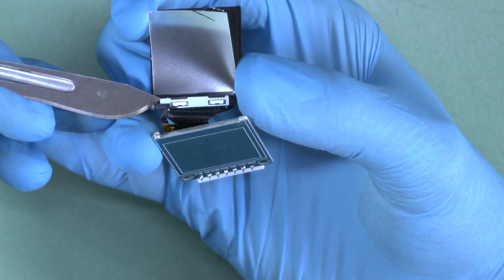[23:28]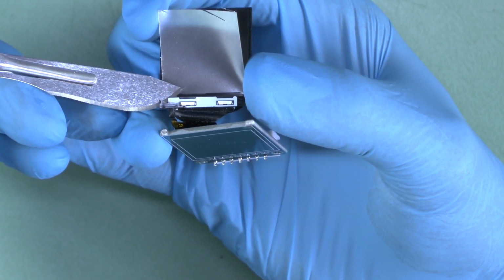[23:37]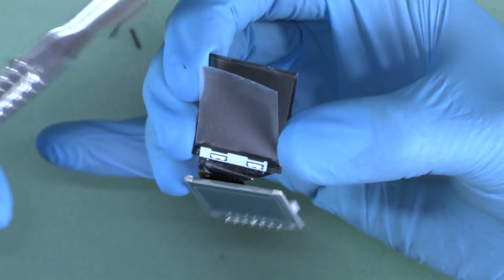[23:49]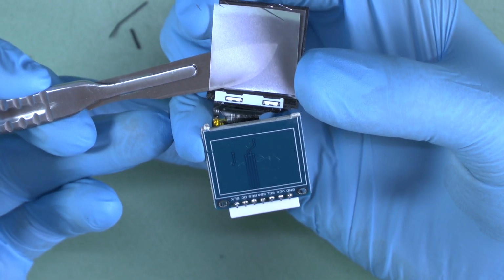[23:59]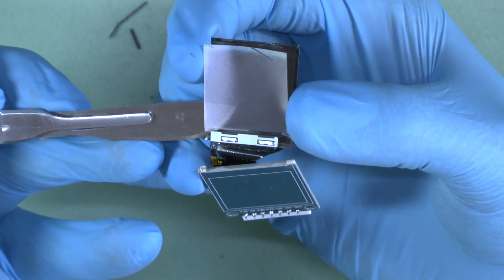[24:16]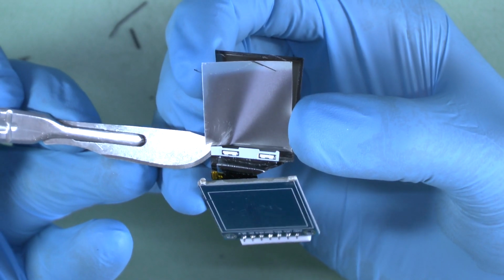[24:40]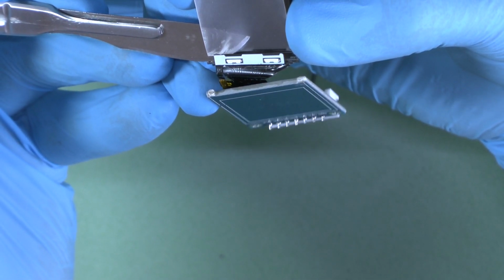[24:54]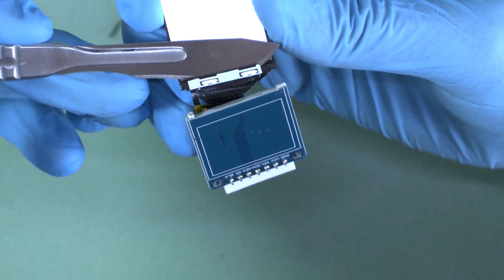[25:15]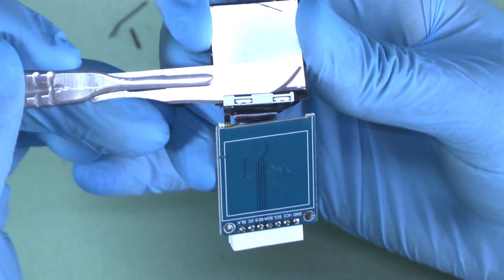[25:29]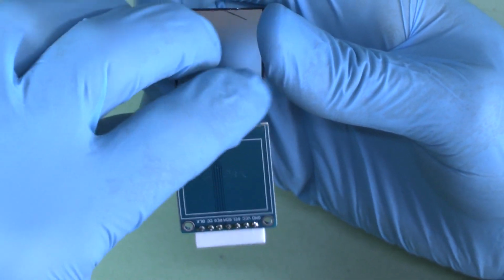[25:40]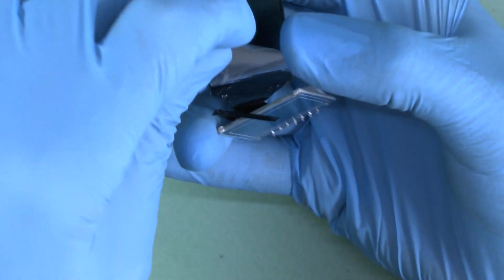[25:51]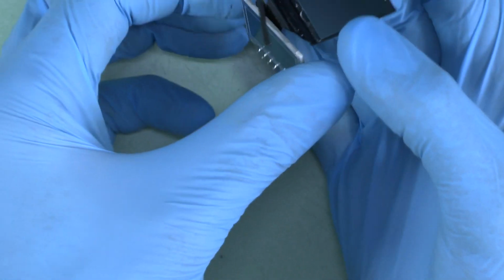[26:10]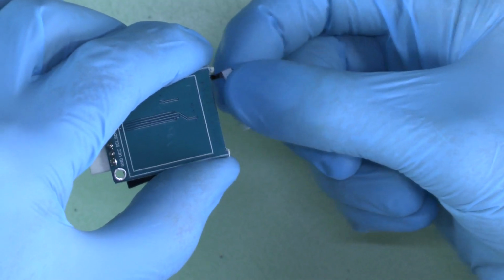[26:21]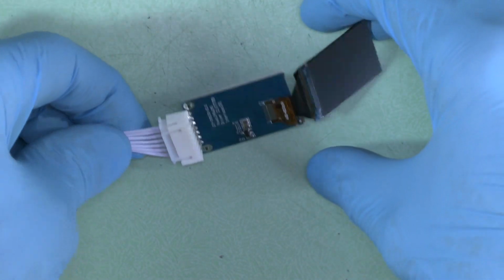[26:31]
Carefully, gently and slowly use the scalpel to release the LED panel from the bottom. Use extreme caution when doing this because you are near the fragile thin glass and fragile ribbon cable. The LED panel has its own little separate ribbon cable for power. Test the TFT panel again at this stage.
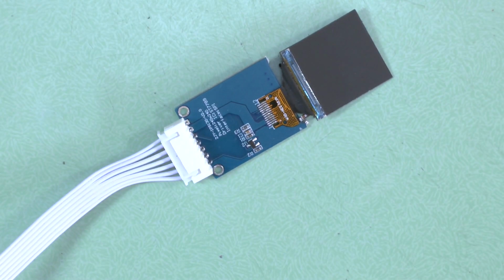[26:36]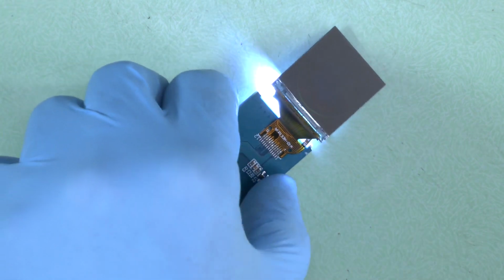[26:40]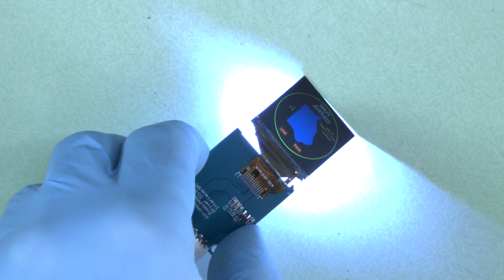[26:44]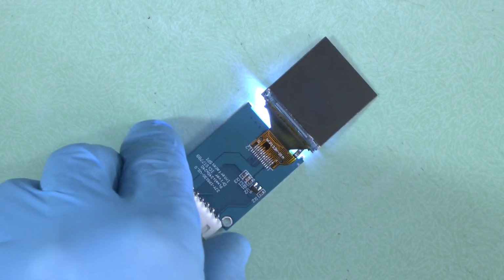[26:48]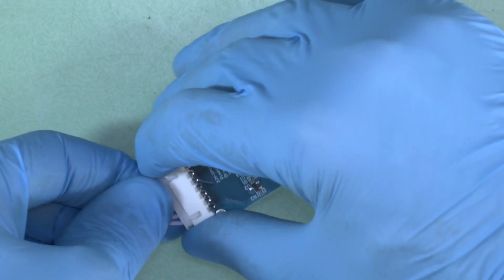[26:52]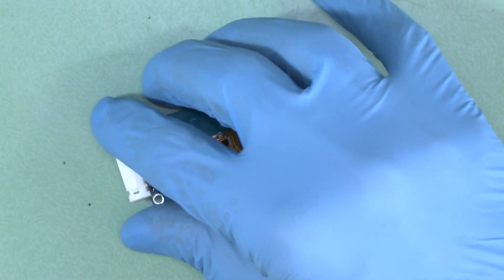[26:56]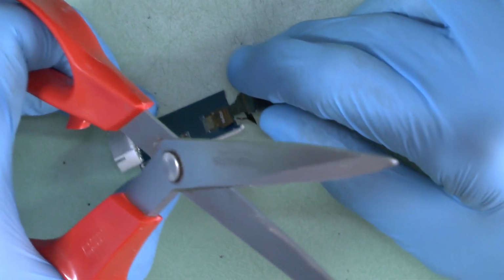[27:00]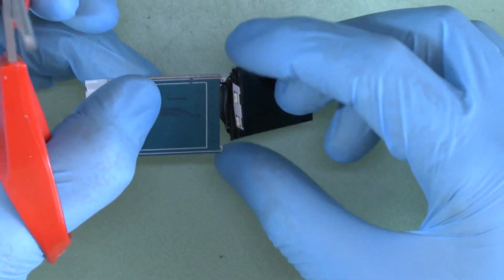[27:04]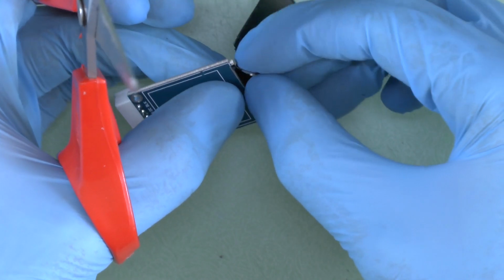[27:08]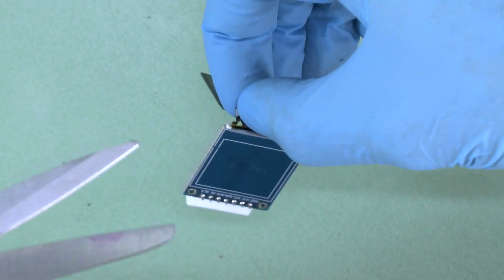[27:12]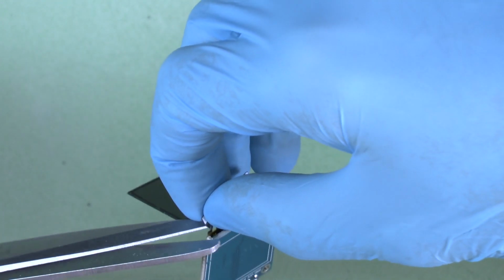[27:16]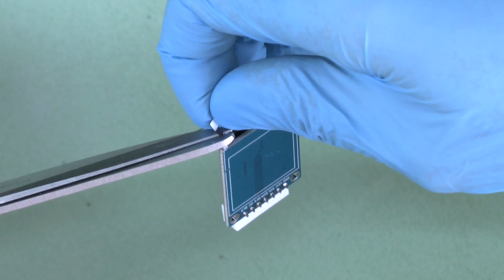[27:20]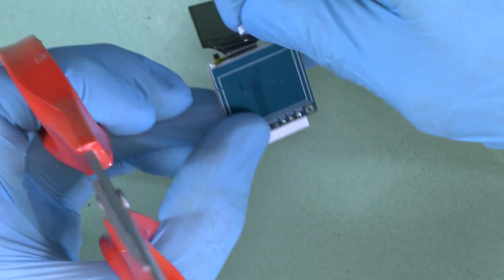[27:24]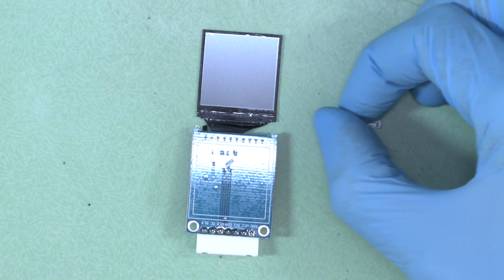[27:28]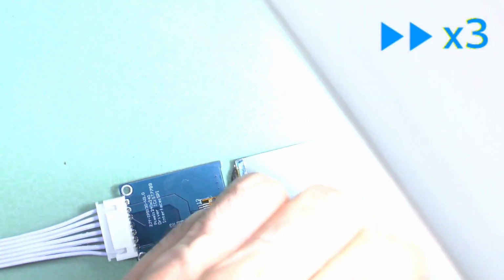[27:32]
If all is working, disconnect the power supply to the screen and cut the LED cable with sharp scissors, taking care not to damage the main TFT ribbon cable. Test the TFT again to ensure it still works.
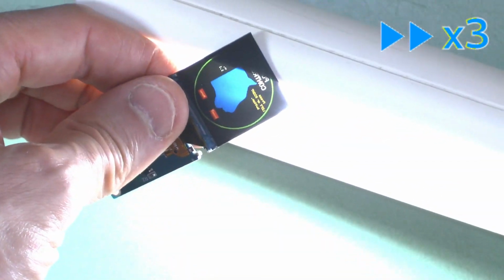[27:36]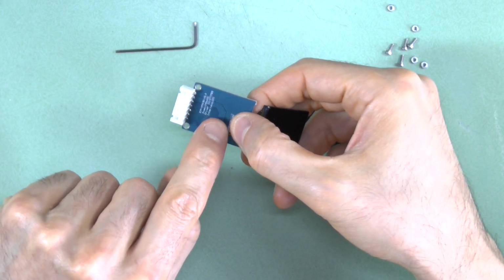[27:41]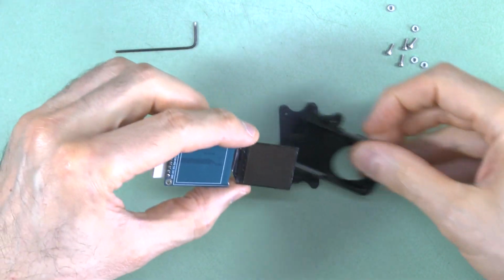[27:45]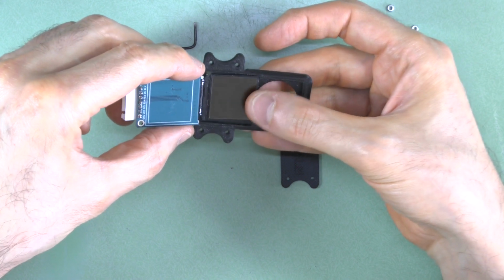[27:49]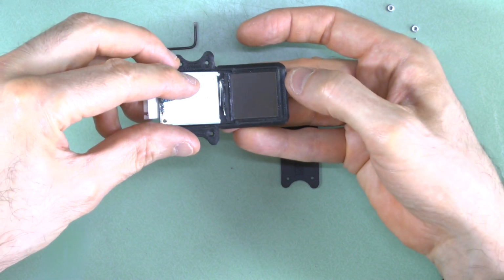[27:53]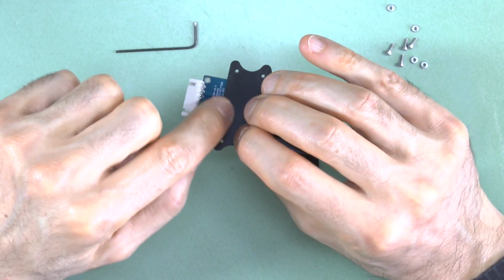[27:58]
Fit the TFT panel into the IAD SLM 3D printed parts as shown. Be very gentle not to use force, or you will break the thin glass connector or slip and rip the delicate connector ribbon. The screen has to be placed the correct way up because these components on the PCB need to fit into this hole for them in the handle area.
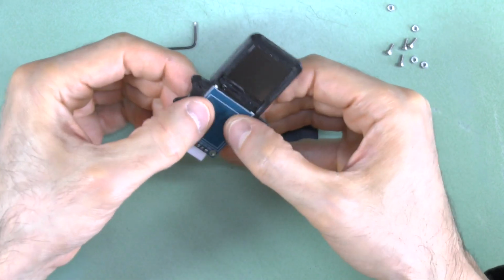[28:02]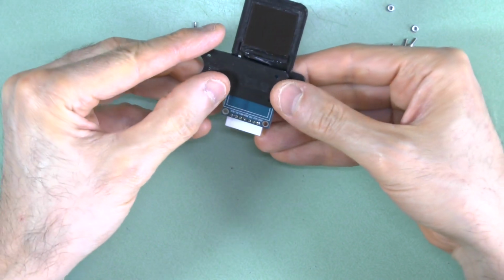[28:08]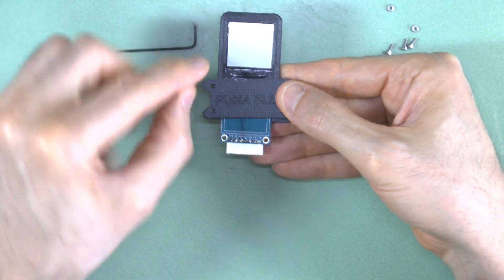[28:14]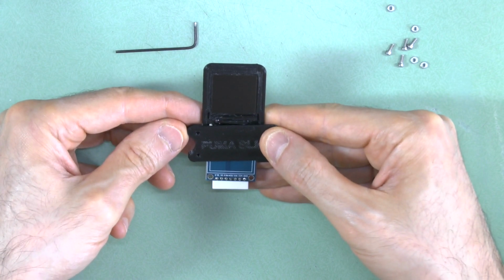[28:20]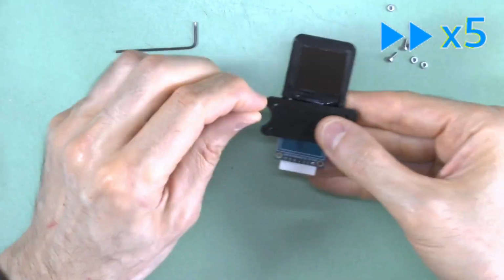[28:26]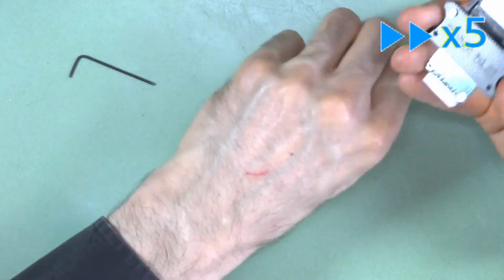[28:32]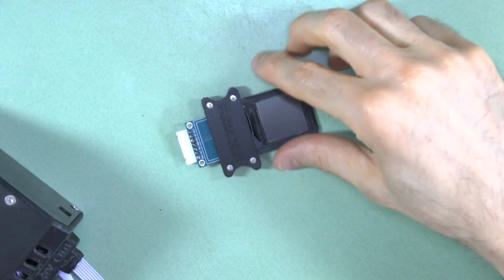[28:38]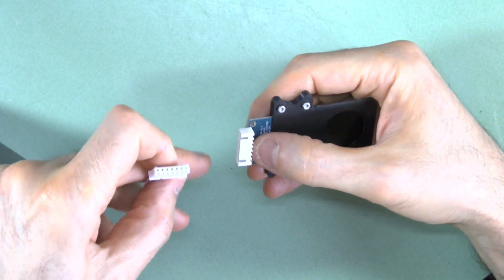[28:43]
Secure the handle cover on the IAD SLM with the 4 M2 screws and nuts as shown. Note that the handle and cover are not symmetrical. You must site the cover as shown with the PUMA SLM label facing out and the letters the right way up if you hold the filter with the handle pointing down and the TFT screen aperture pointing up as shown. Test the resulting IAD SLM TFT to ensure it still works.
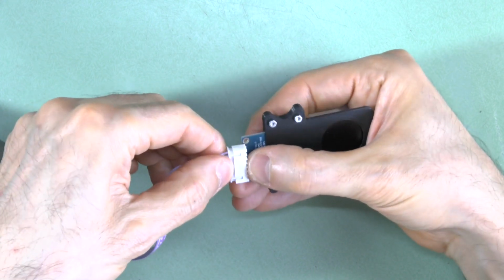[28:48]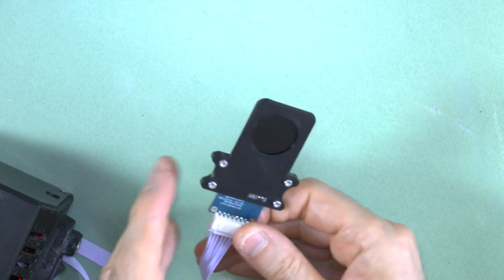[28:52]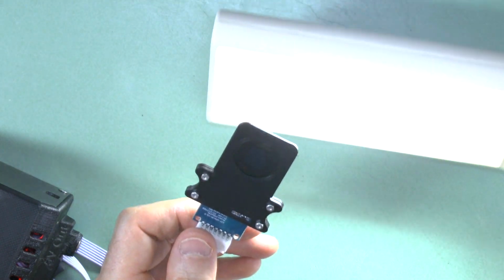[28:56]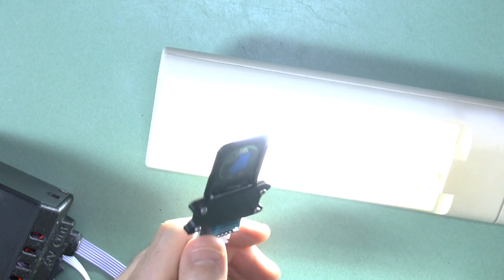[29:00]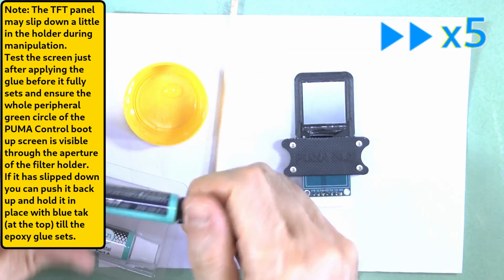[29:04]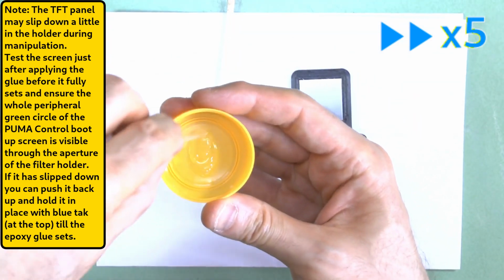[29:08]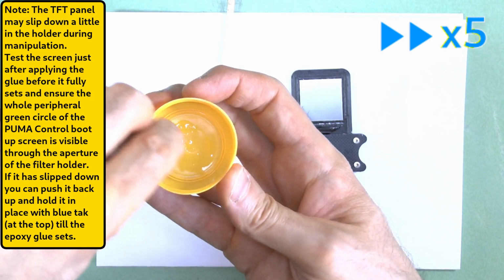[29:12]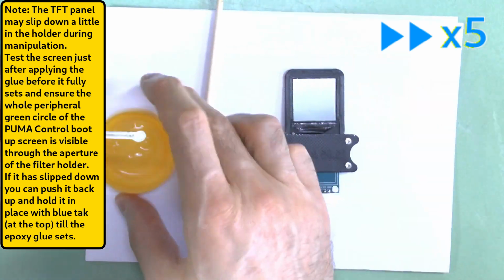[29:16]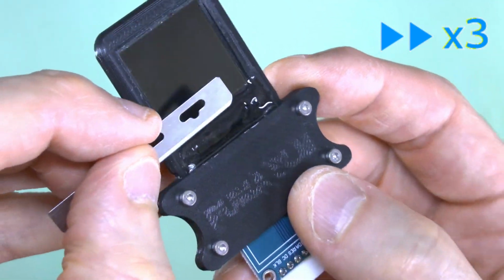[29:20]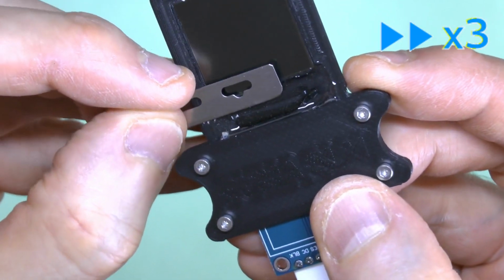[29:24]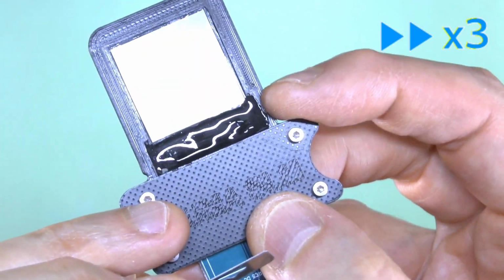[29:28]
Now that it is fully assembled and working, disconnect the power and further strengthen the fragile thin glass connector by putting a second wave of epoxy in the recess around and over the thin glass extension to strengthen it. This time you must glue right to and over the sides of the glass screen and contact the plastic of the handle with the glue to prevent the TFT screen from slipping during use.
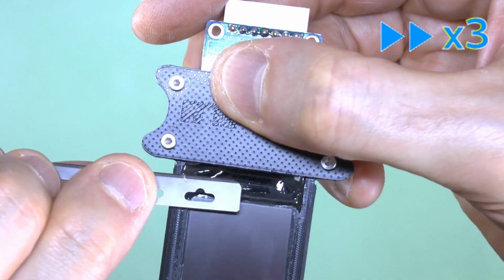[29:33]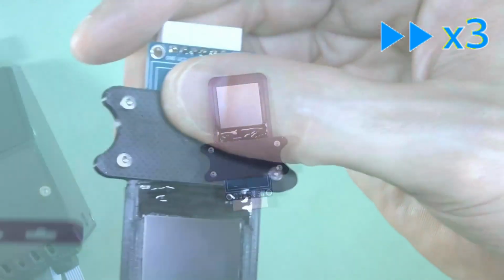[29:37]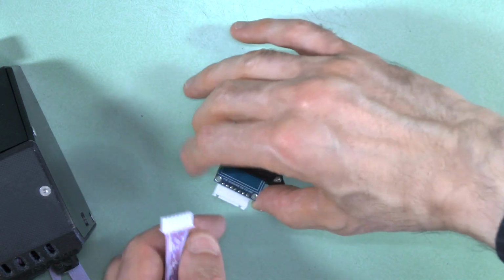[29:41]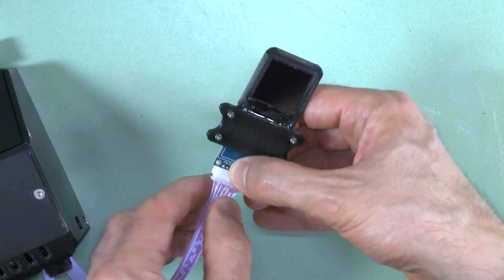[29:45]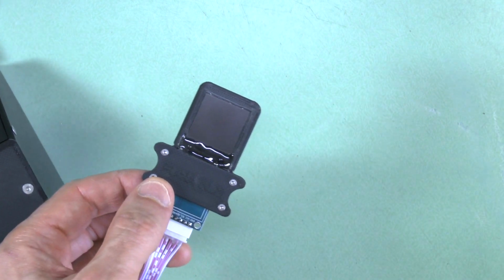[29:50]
Just be careful not to get any glue on the clear aperture and avoid going over the top surface of the filter slider itself. After the epoxy has fully set, test the unit for the last time. If it works, then you have succeeded in making your fully functional PUMA SLM module.
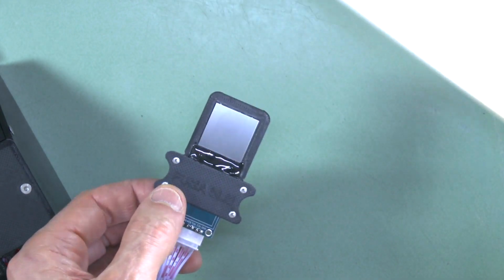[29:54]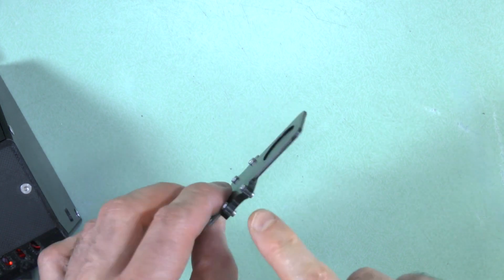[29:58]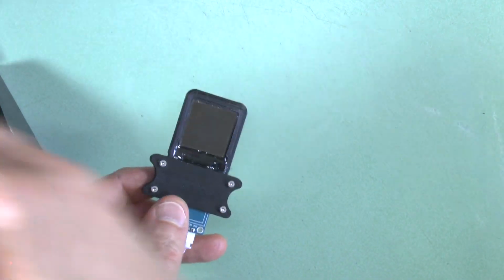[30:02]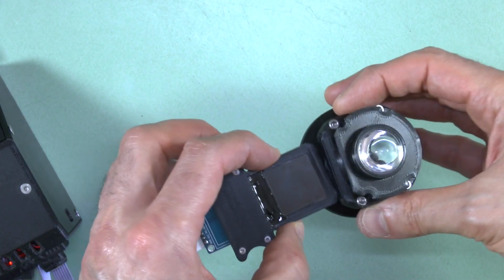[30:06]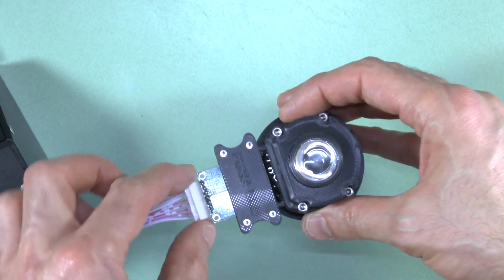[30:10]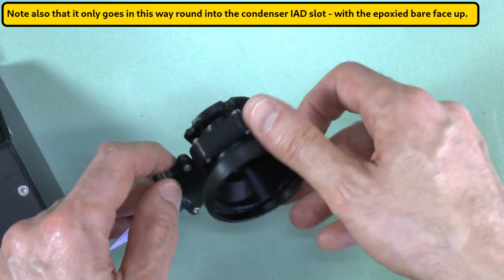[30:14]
Always take care when inserting or removing the SLM from a filter slot not to put bending pressure between the filter handle and the filter slider. I tend to hold the SLM by the sides of the slider, not the handle, when inserting it most of the way, and only use the handle to push it in the final amount till it clicks in place. If you feel undue resistance, stop and investigate why.
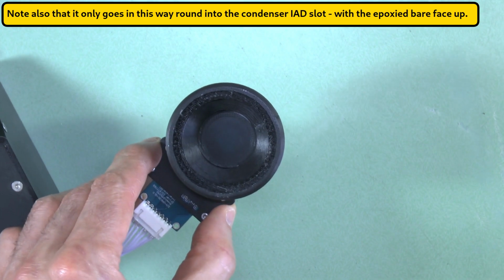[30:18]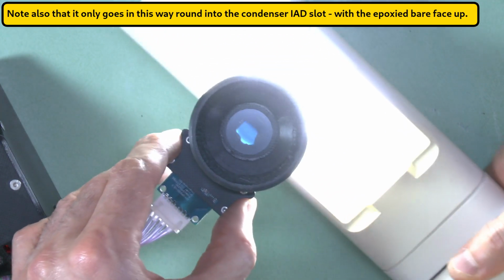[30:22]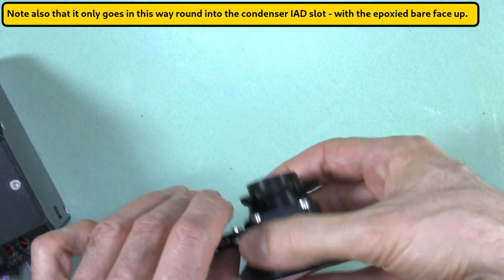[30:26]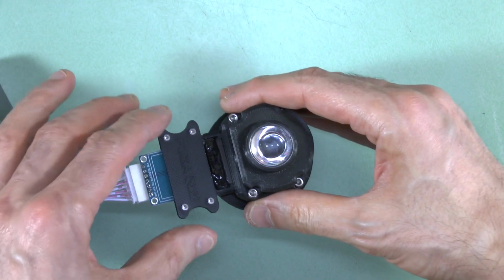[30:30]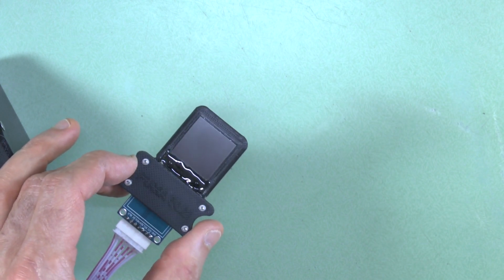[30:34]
Never force it in. When removing the SLM from a slot, I usually push the SLM from behind as shown, rather than pulling it out via its handle, because pushing it out in this way results in less chance of accidentally putting bending pressure on the thin glass connector plate.
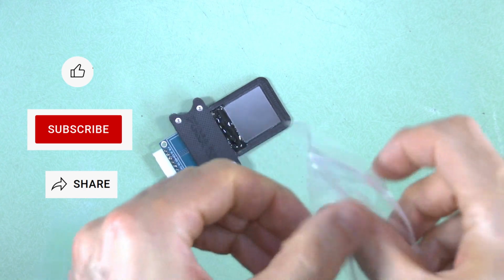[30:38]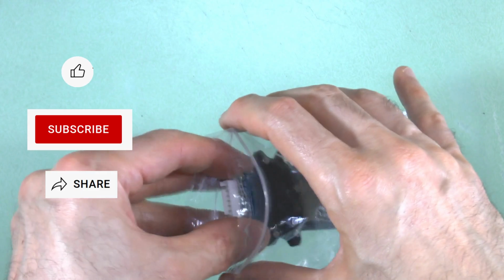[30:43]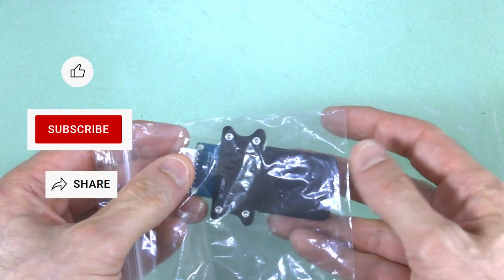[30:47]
In other tutorials, I'll show you how to use the SLM to achieve advanced contrast modes of imaging. This video has been primarily about the mechanics of building and using the SLM.